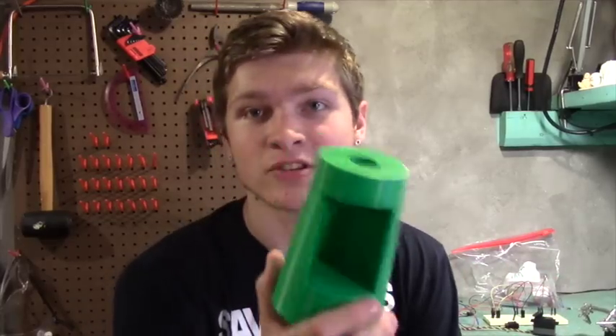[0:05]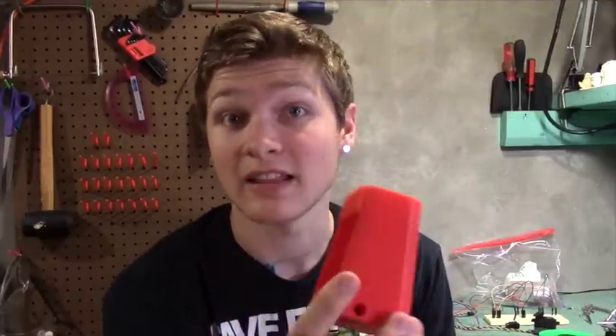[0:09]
We'll go through a couple iterations. I messed up a few times, but ultimately I decided on a design that I like a lot, and it's going to hold everything the way I want it to. Hopefully in the next episode we'll have a hand that'll go on top of this forearm that's controlled by all the electronics from the last episode.
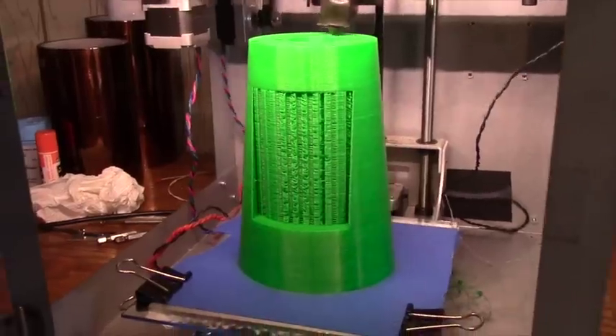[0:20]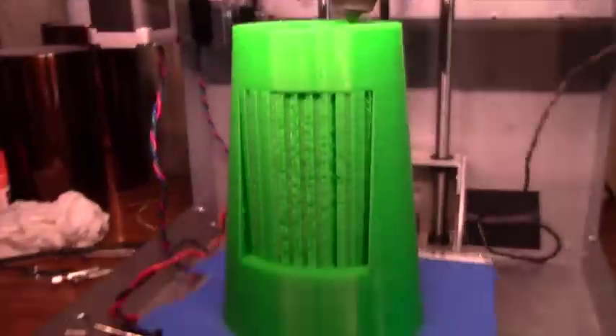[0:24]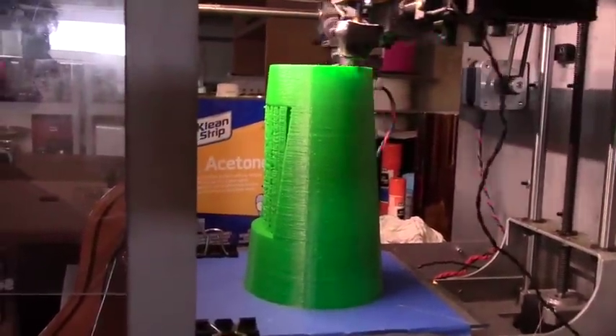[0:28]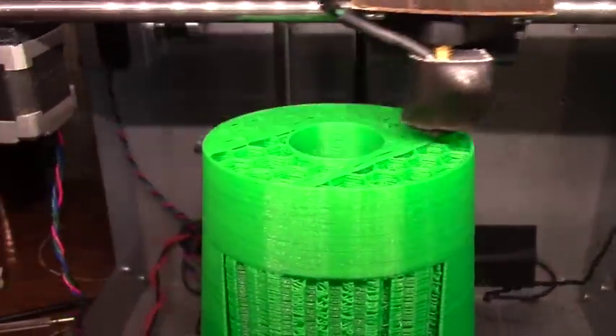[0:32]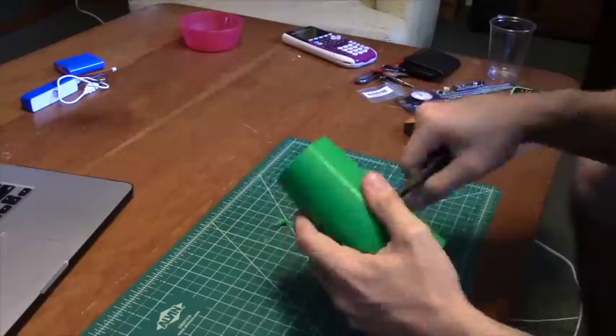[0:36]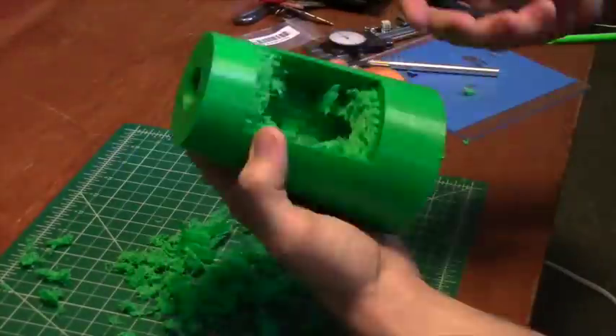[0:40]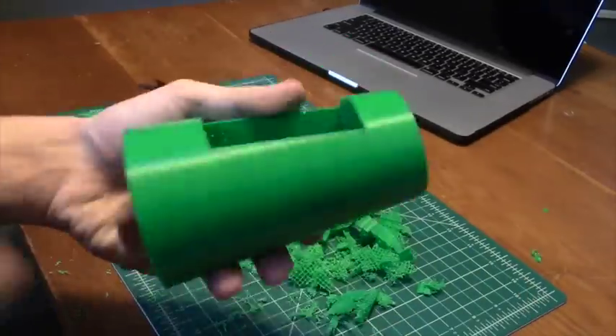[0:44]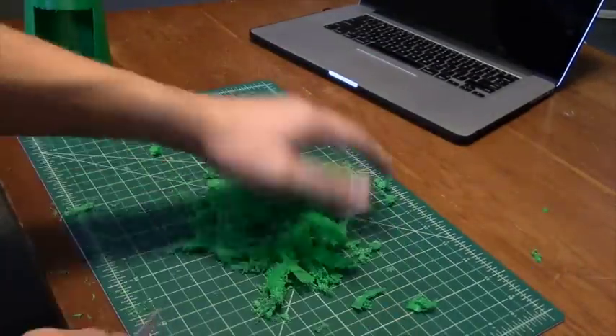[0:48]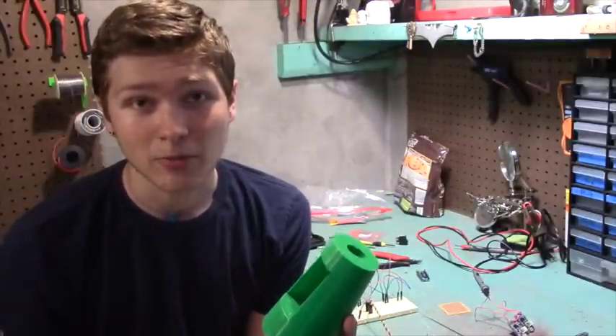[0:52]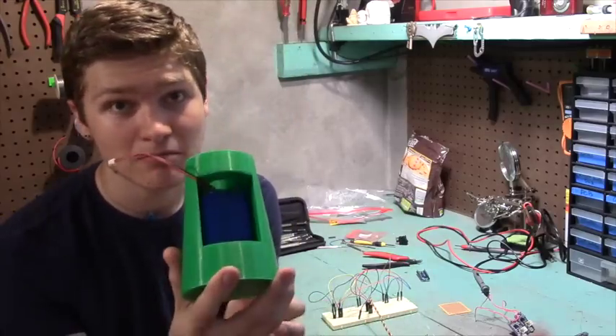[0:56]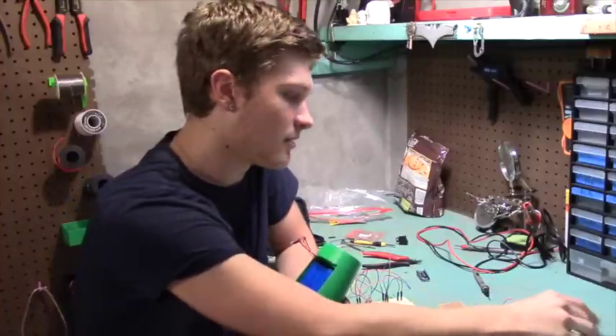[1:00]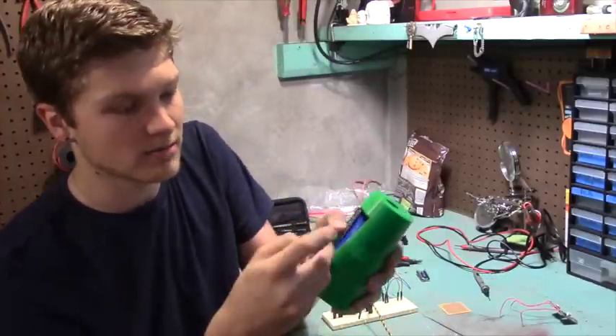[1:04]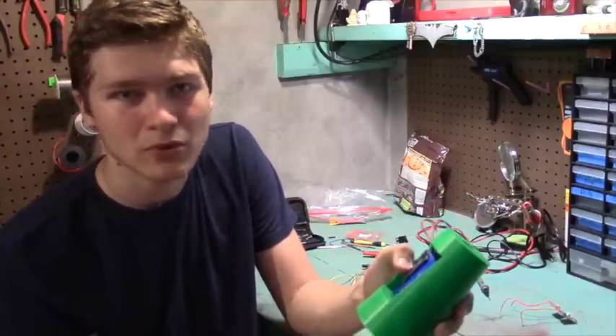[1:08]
So I printed out the design, and almost immediately after I got it off the print bed, I realized that it's going to be completely useless. I can fit the batteries in beautifully, both of them slide in. Power boosts fit in on the top as well, but if I were to try and fit the Arduino and the EMG sensor in here, it's going to get crowded, there's no space for them.
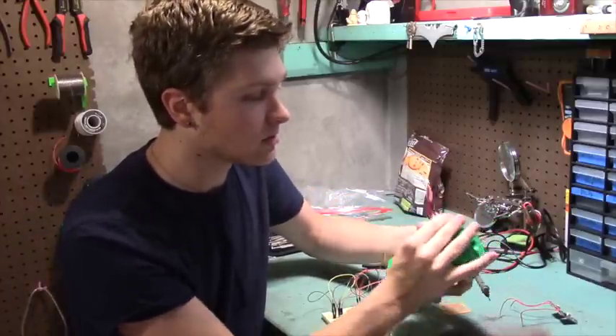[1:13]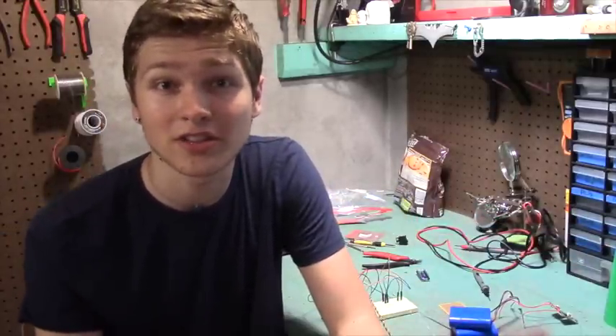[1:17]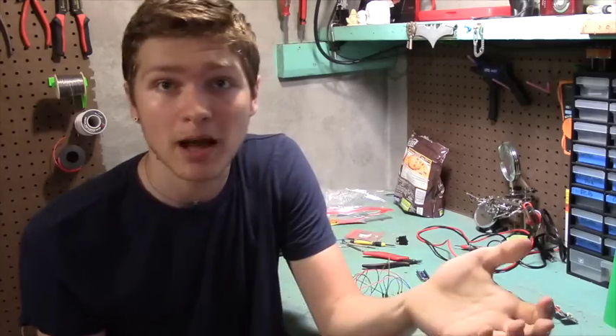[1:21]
So I'm going to have to design something else. I'm going to make a little pocket, or like an enclosure that's going to hold all the electronics that can just slide in and out of the forearm part, and that's what I'll populate. So I'm going to CAD that now and then print it out.
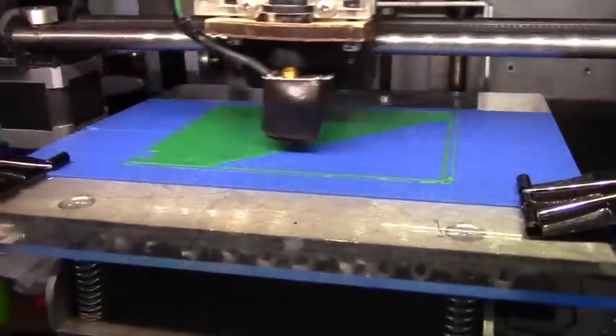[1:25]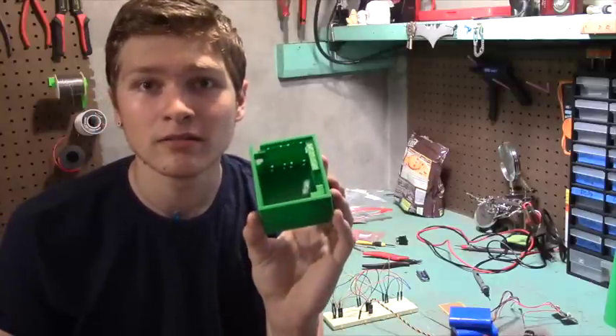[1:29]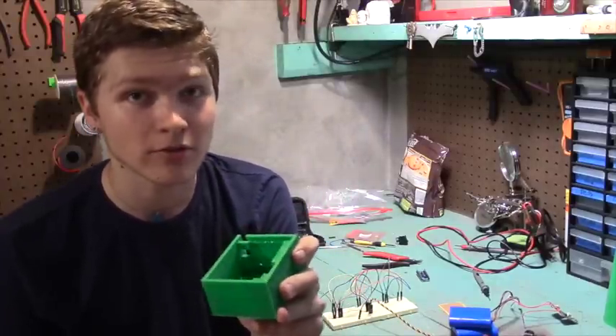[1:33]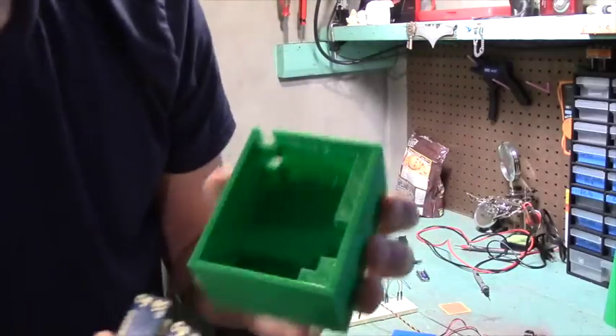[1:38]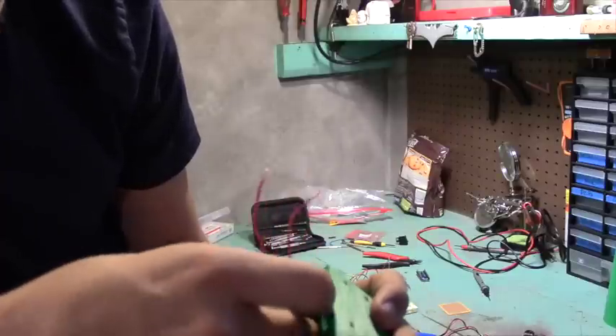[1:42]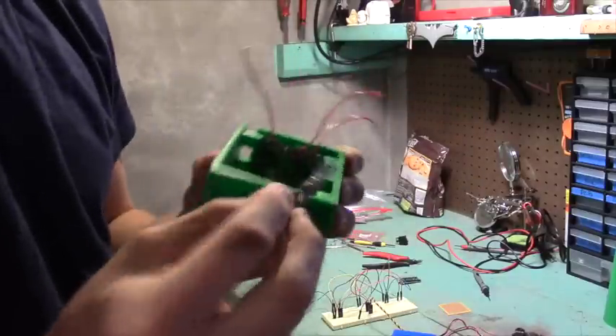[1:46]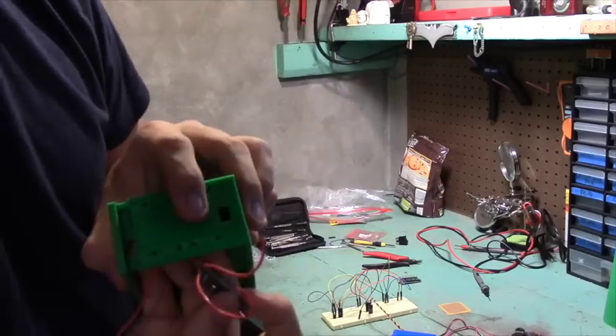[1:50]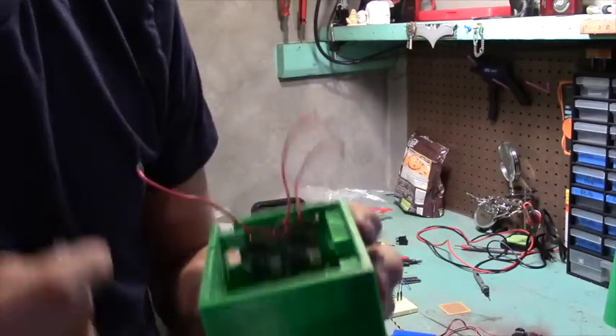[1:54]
Alright, so I have my new printed socket thing, and this works a lot better, but it's still not what I need, so I need to do another redesign. What you can do is take the power boosts and slide them in on the top, and they fit in there pretty well, and those are upside down. You can take an Arduino, and that guy fits in there as well. And there's even a little programming port up there. And all of these are holes for mounting the power boosts in there.
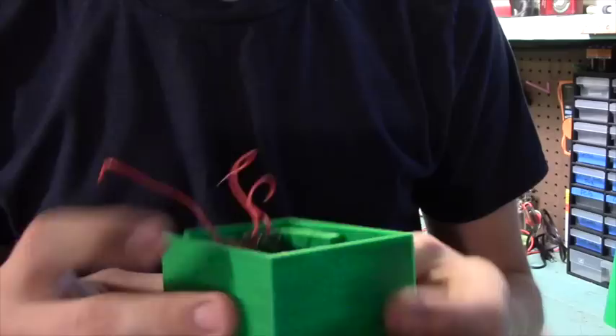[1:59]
So now we have our power boosts and our Arduino mounted in there all right. The EMG board stays in there pretty nice as well. And then provided you can get them all to stay inside all right, the batteries fit in beautifully too. But this thing is huge. If I hold up my forearm as a reference, this thing is clearly so much bigger than what I want it to be, sideways as well. It's way too big. I need this to be a lot smaller.
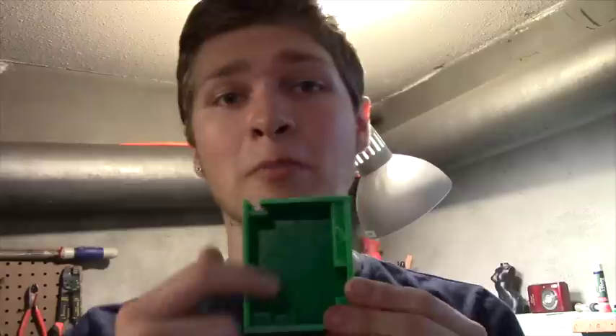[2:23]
So what I think I'm going to do is make it so that nothing is on the side of the batteries. The thing that I don't like is how wide it is. It's really not too thick. I think that's probably a good thickness. I don't really have a choice because the thickest part is the two batteries next to each other. But I do want it to be a little slimmer this way. So I'm going to CAD that and print that puppy out in some nice red PLA.
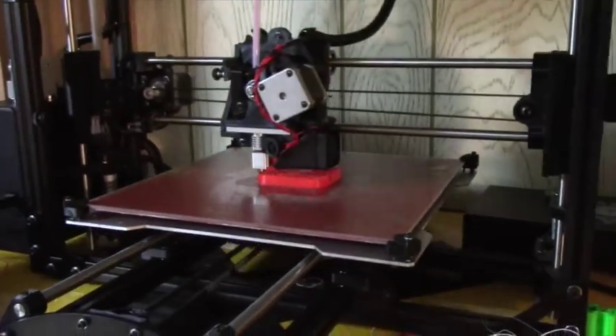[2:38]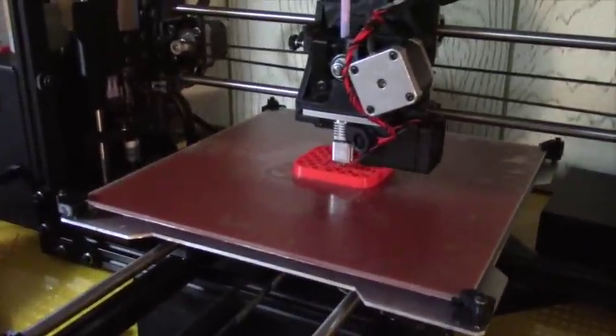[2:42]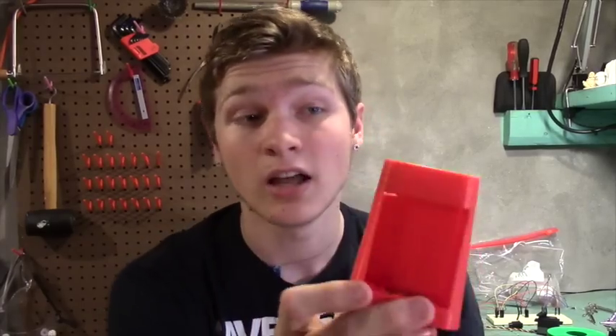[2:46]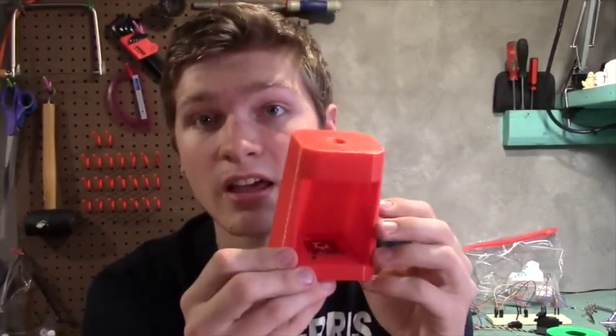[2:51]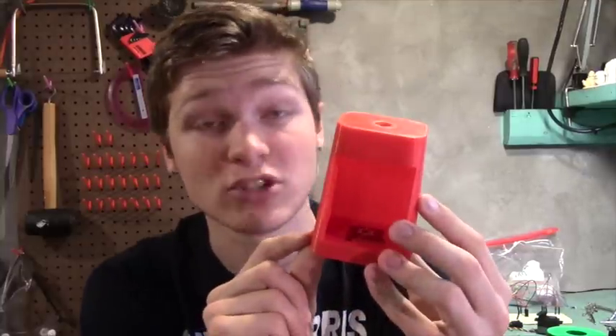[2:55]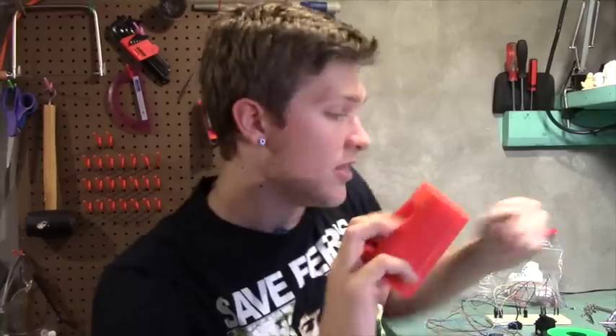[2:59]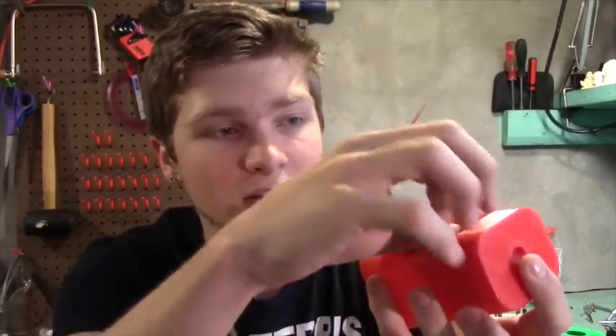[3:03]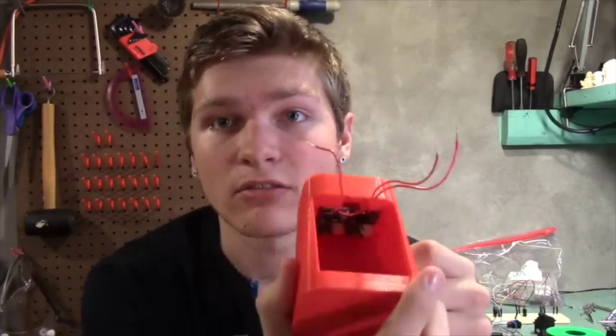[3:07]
Alright, so my print is done. It's got this huge cavity in the center for the batteries to fit in. You can see at the bottom, I have a perfectly recessed little area for my EMG board to fit. There's a hole on this side for the plug. Then all of the power boosts go into the top part, and those fit right into a little pocket that I made for them in CAD, and those fit nice and neat right up in there.
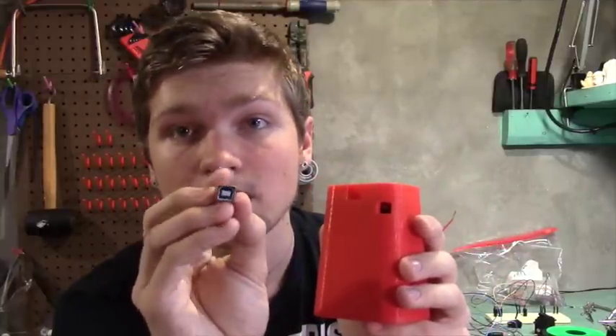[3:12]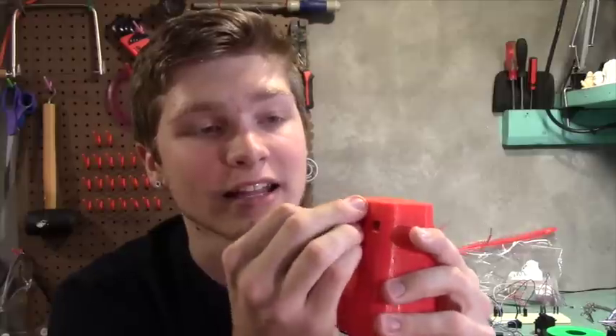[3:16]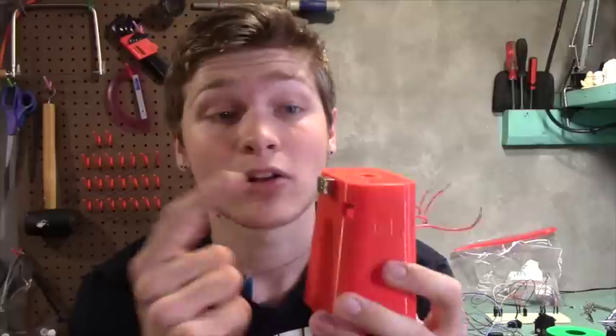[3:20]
On the back side, I've got a USB, I don't know what type this is, type B something. And that is going to slide in like this, and obviously it's going to be the other way, but that'll be facing out, and then that's how I'll recharge the batteries.
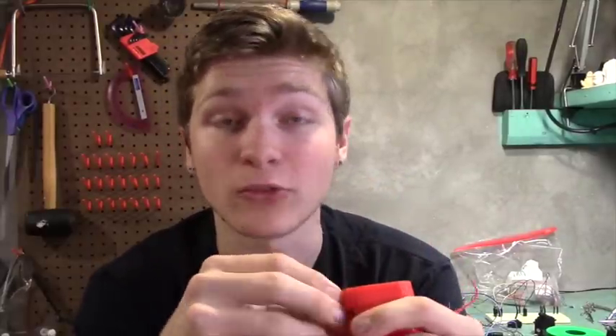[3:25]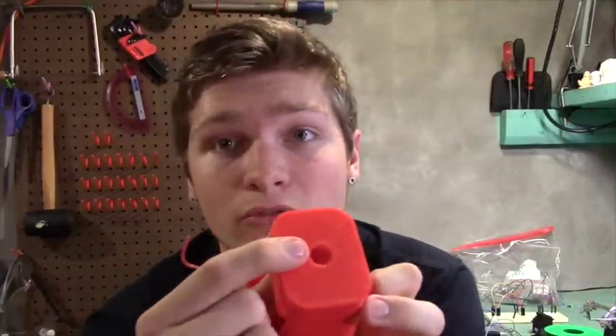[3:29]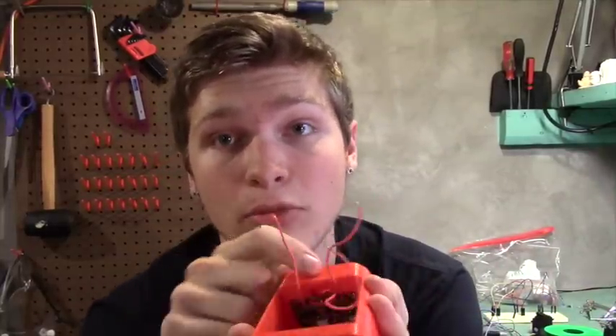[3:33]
This USB port is going to be wired up to the two power boosts, and this will be how both batteries can get recharged. I've also got a hole in the top for my servo cable to run through, and then that'll come through down here.
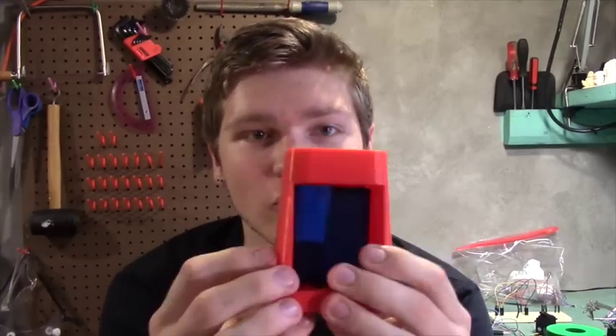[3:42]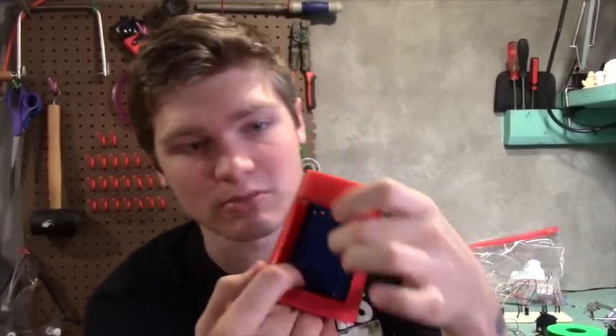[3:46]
Once everything is in, I'm going to take my batteries. There's nothing more satisfying than designing something in CAD and 3D printing it, and then everything just fits together. So I got the batteries in here. They're both going to fit in really nicely. They're going to cover over the EMG board, so you can see both of them slide in really well.
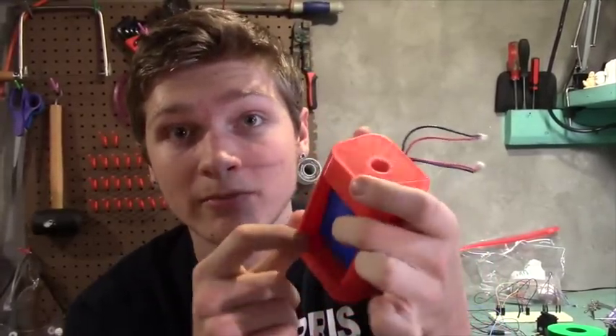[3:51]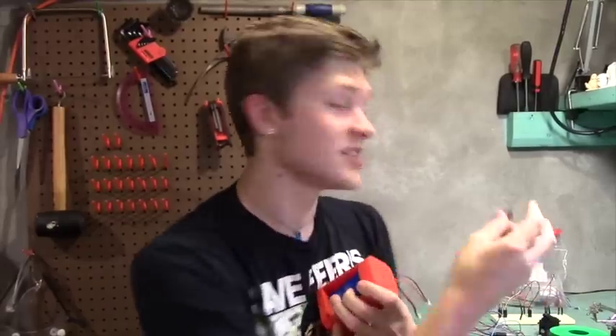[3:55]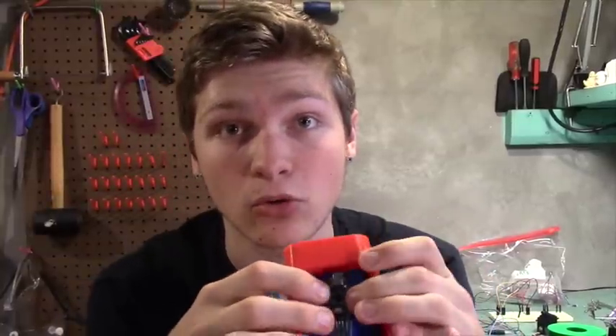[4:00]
There's a little hole in the bottom for the cables from the EMG board to come up and connect to the Arduino, which is essentially just going to rest in front of here. I'm going to 3D print a little bracket that'll hold it just in place.
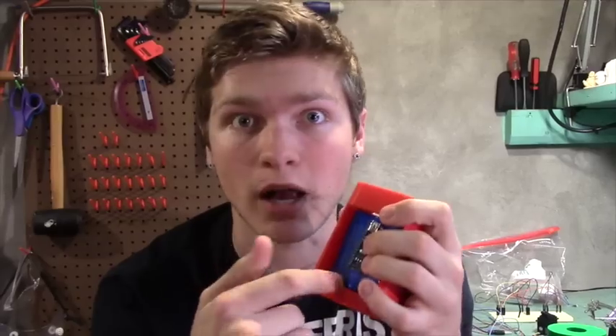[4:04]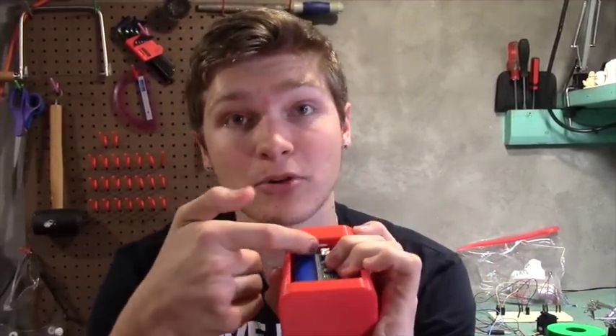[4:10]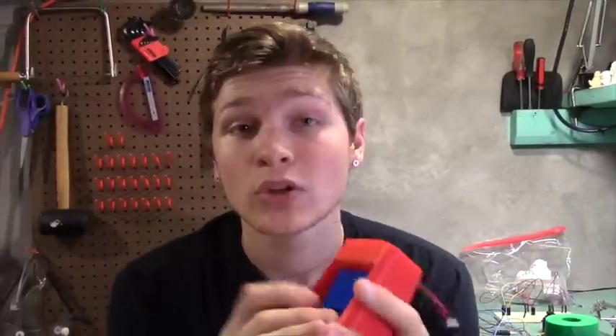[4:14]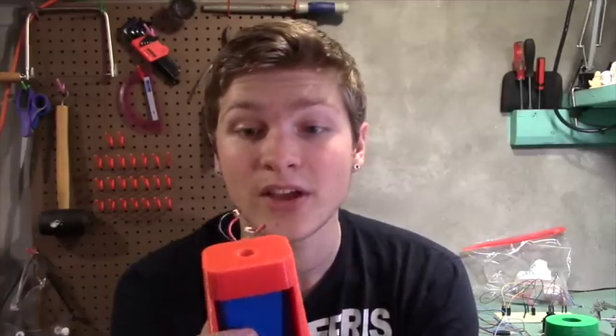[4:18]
This front part is going to be open for Maker Faire so people can see what's going on inside. But all the cables will come up from the EMG board to here. And then there's also a little port for the cables from the Arduino to go up and connect to the servo, the power boost, all that jazz. So what I'm going to do now is wire everything up and put them in their proper places and see if it works.
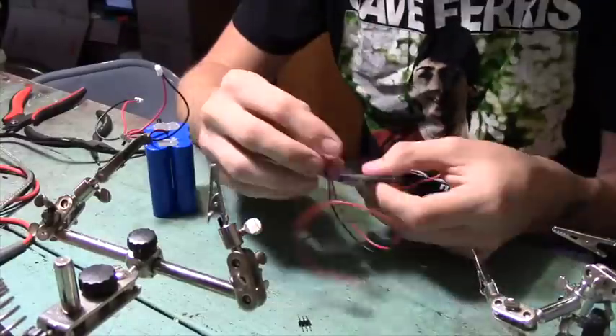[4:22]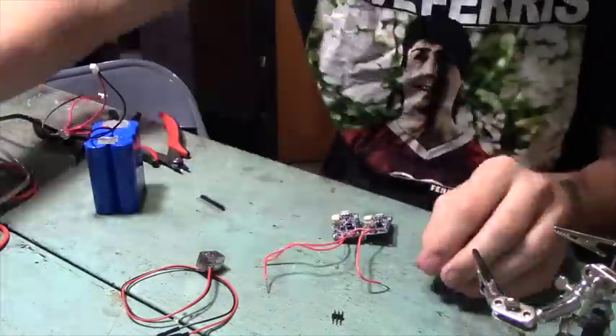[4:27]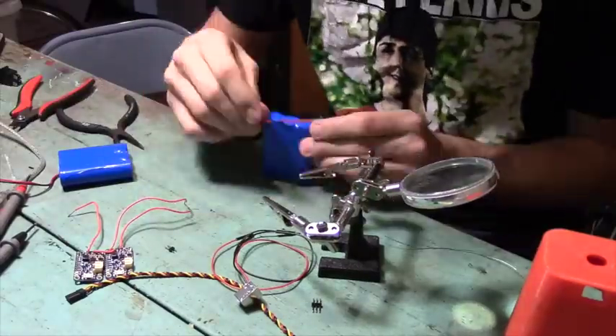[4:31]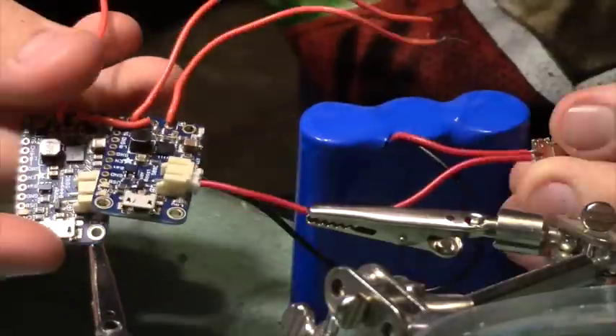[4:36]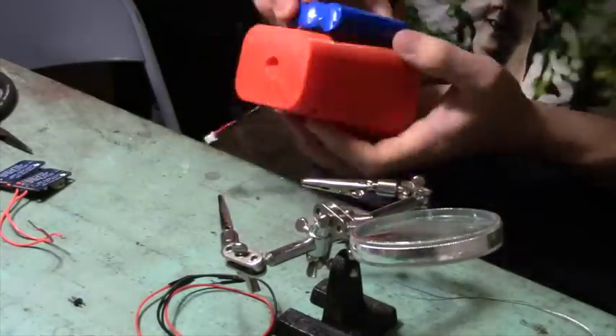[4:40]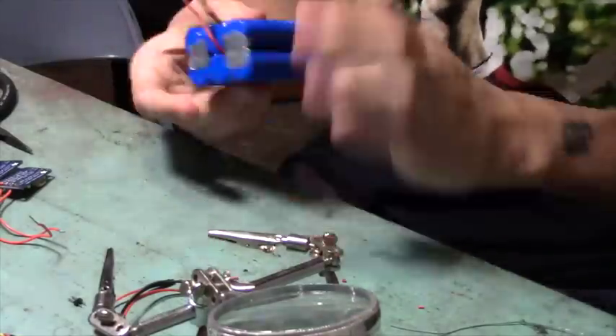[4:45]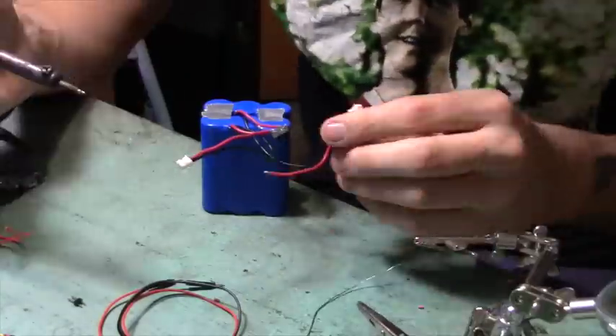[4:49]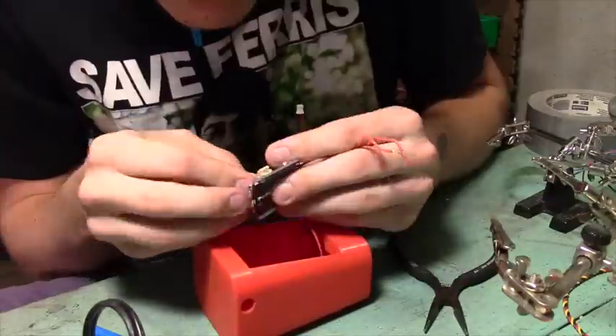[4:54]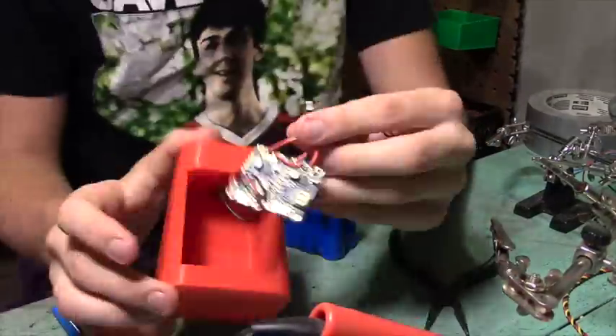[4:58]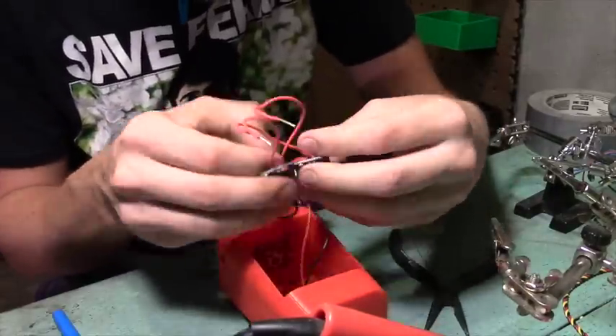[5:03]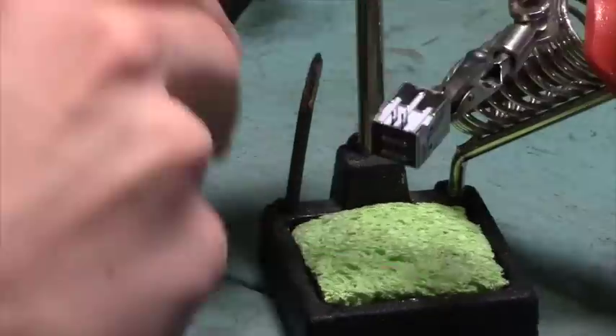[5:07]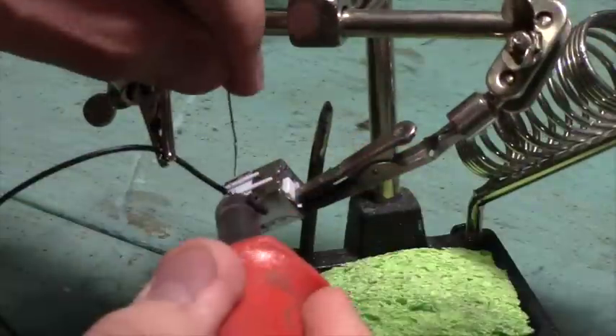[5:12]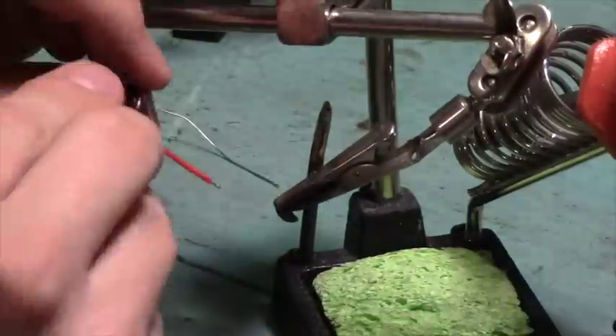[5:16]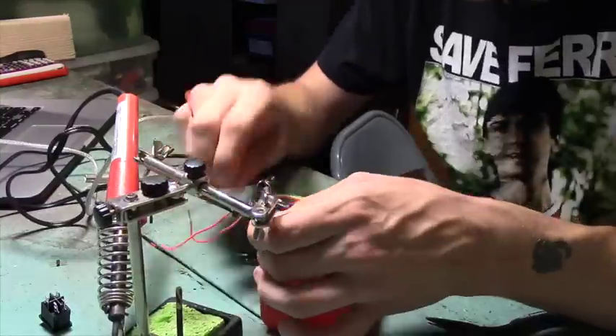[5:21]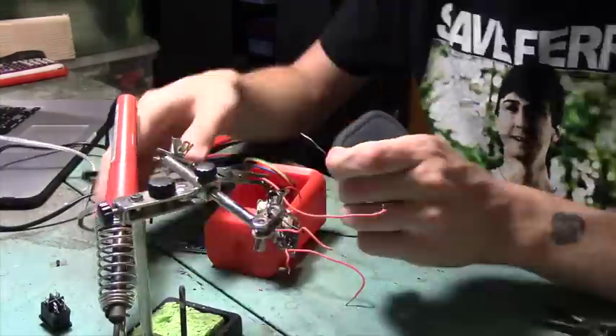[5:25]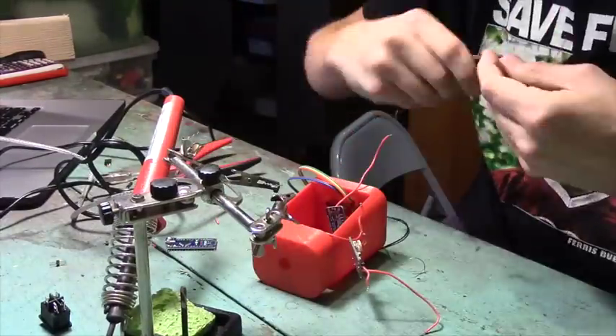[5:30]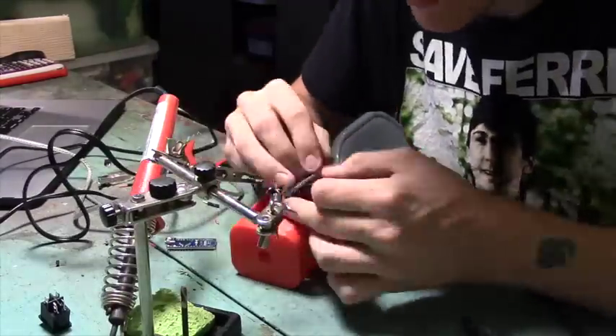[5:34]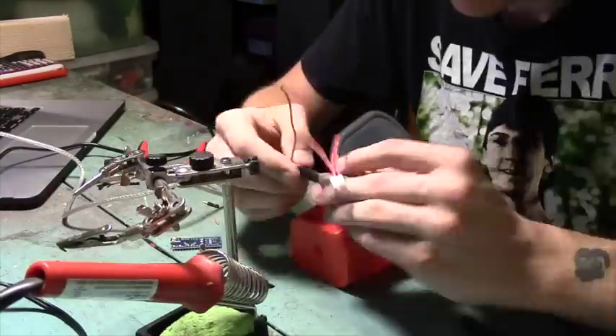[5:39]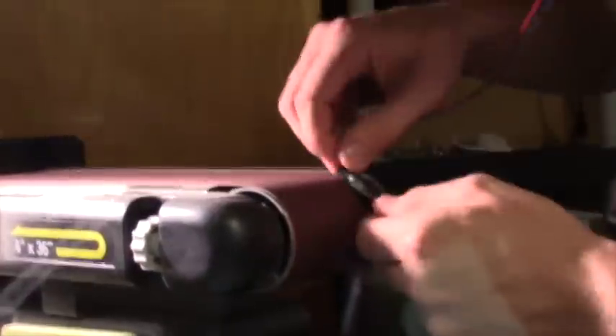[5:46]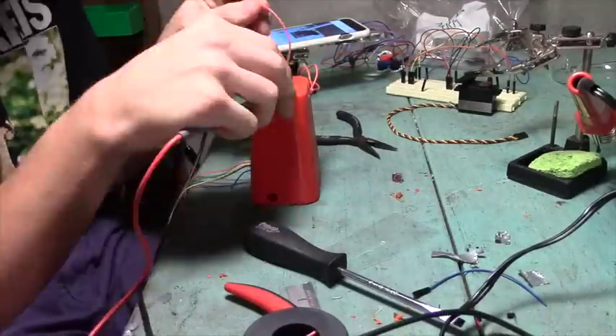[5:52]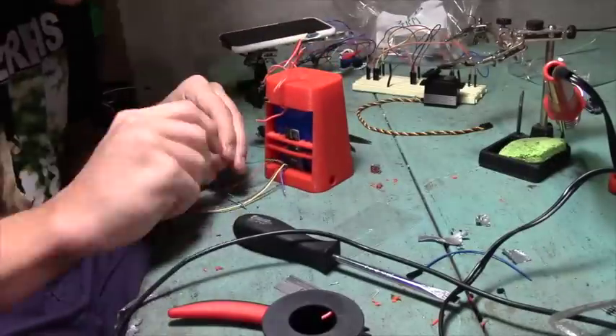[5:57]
Alright guys, so I finally got everything mounted inside the forearm piece. I've got this switch sticking out because I have a really tiny set of switches that I'm going to use for it, but I don't have any heat shrink right now, so I'm going to wait until I get some heat shrink in before I add this, but this switch basically just turns on both batteries.
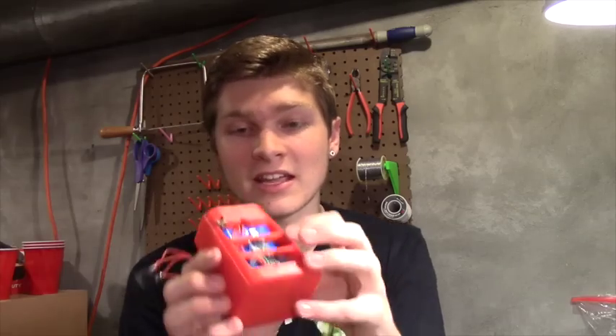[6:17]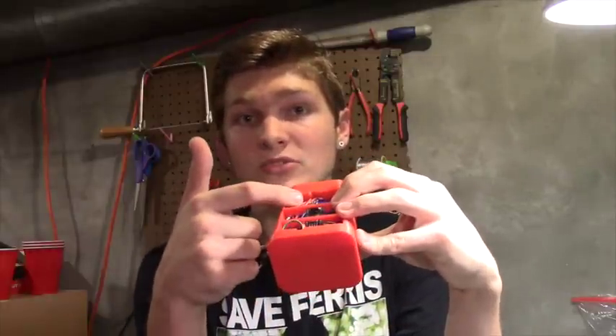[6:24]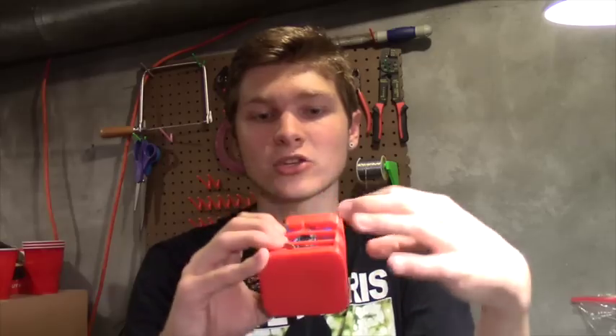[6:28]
So you can see in here I've got the two blue battery packs, and I have my Arduino mounted with all the cables coming from the EMG sensor on the bottom and the power boost on the top. And then I printed out these little brackets that just hold the Arduino in place and make sure the wires have some management to where they go. On the back is a USB style charger, and you can just plug that right in.
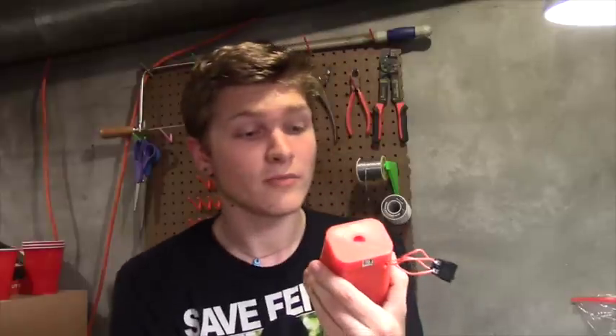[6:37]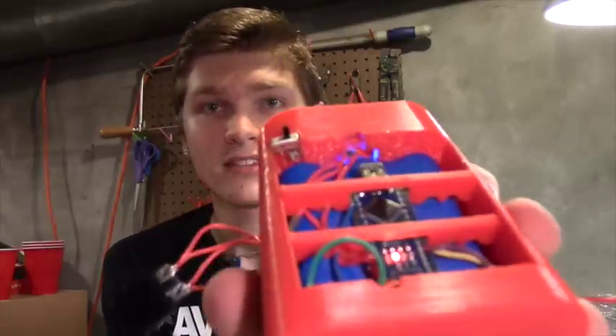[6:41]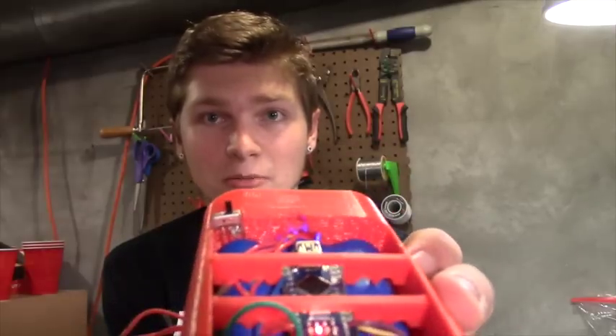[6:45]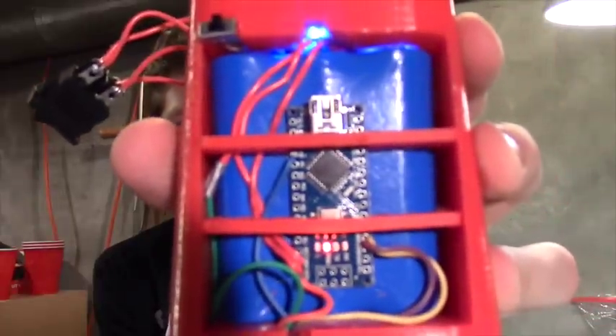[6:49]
All right, so I'm going to turn it on, and if you look closely, you can see the blue lights shining in the top for the power boost, which just means that they're powered up properly. And then I also have a little script on the Arduino that makes the pin flash every second or so, just to make sure that the Arduino is getting its power. I have yet to test it with the EMG sensor.
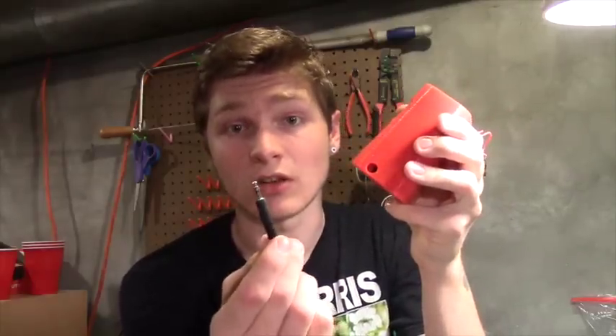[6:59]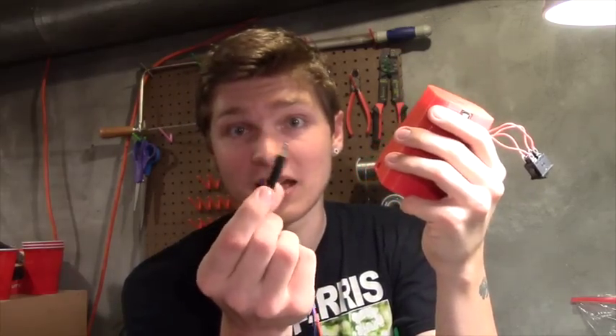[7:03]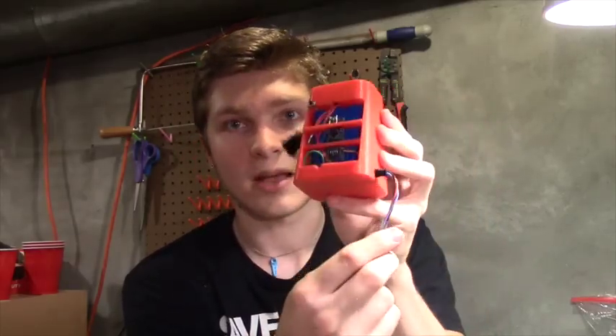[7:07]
Now you can see in the side there's a hole, and that's where the plug for the EMG sensor goes, and the plug is a little too big. So what I did is I just took it to my belt sander, and it fits right in there, and it snaps right into the side.
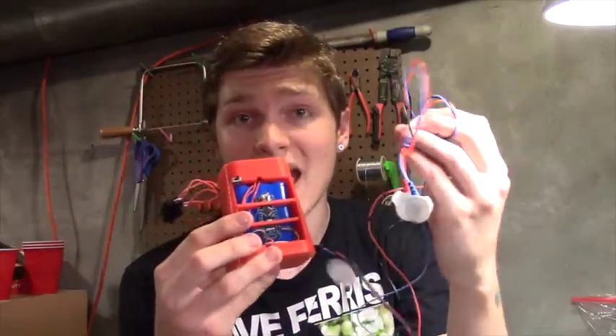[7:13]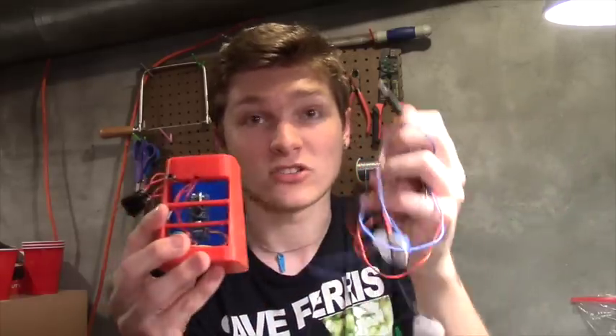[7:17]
So what I can do is leave this sitting on a table and have people come up at Maker Faire and try and put these pads on themselves and try and control the hand with different muscles. So that makes it really nice. I can just unplug that.
So yeah, that'll do it for this episode. Stay tuned for the next one where I'll design the hand and put the servo in it and connect it all together and try it out.